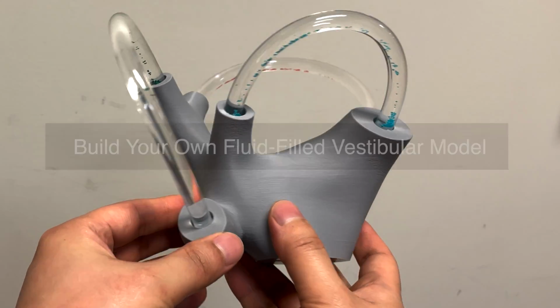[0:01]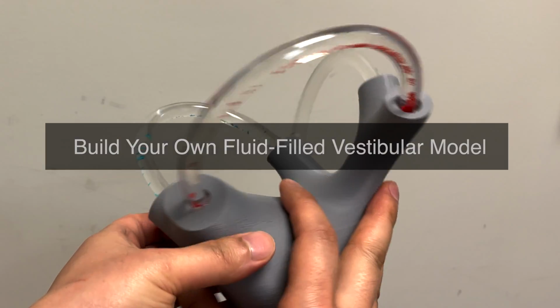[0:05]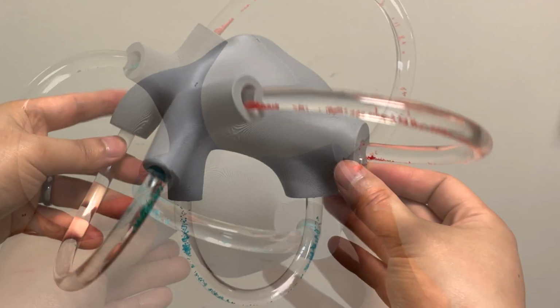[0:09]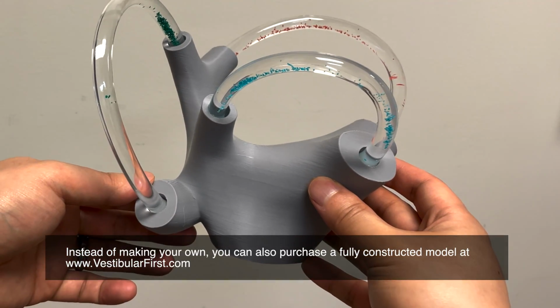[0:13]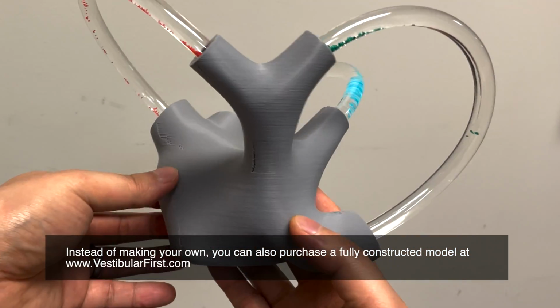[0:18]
The folks at Vestibular First have provided instructions on how to make your very own fluid-filled vestibular model. This model is enlarged, but anatomically accurate, and allows patients as well as healthcare providers to better understand the semicircular canal fluid dynamics as well as how inner ear crystals respond to gravity when displaced in the canals.
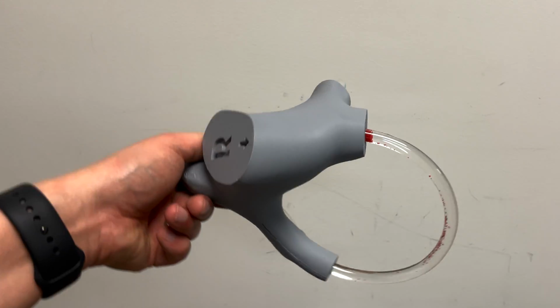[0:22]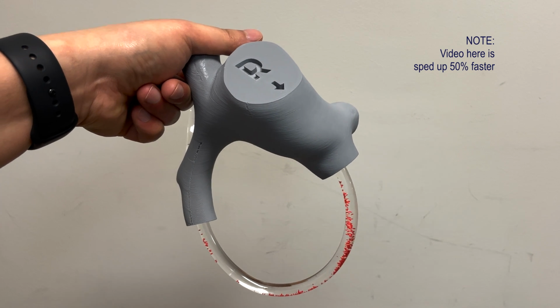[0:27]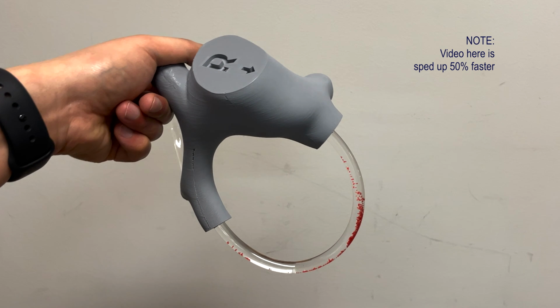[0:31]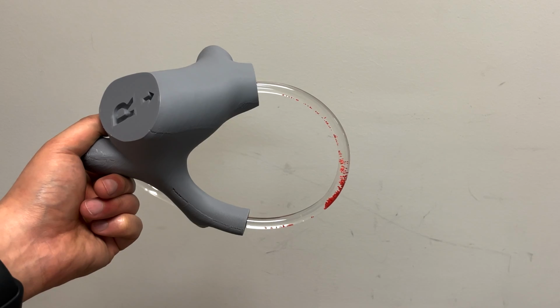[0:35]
The model, once constructed, is 5.3 inches tall, 7.9 inches wide, and 7.5 inches deep. The tubings contain mineral oil and crushed rock which mimic otoconia movement and response to gravity in a realistic manner. You can also purchase a fully constructed model at vestibularfirst.com.
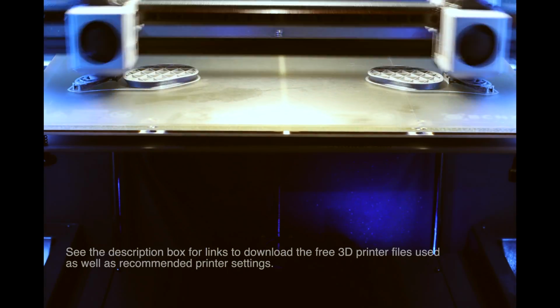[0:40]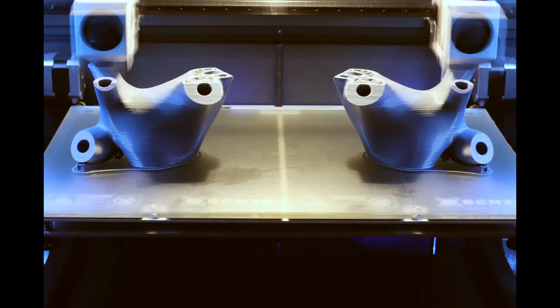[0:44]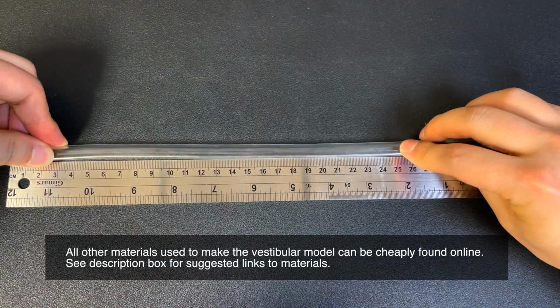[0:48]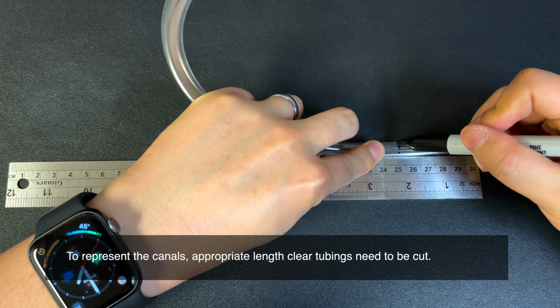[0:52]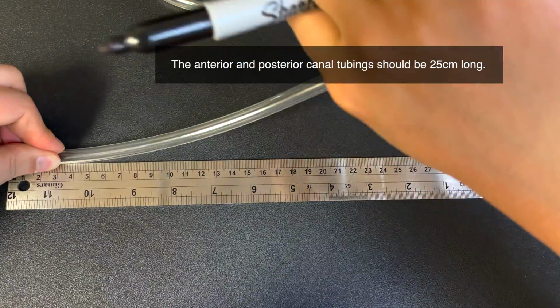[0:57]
First, 3D print the vestibular model. See the description box for links to download the free 3D printer files. Measure out and cut clear tubings to represent the semicircular canals. The anterior and posterior canals should be 25 cm long whereas the horizontal canal should be 21 cm.
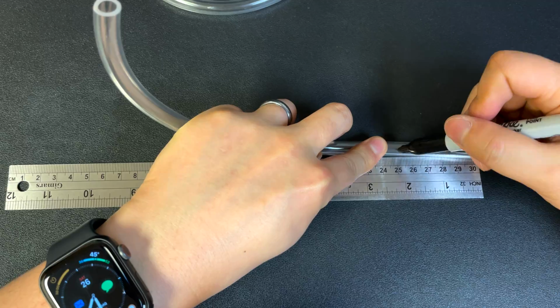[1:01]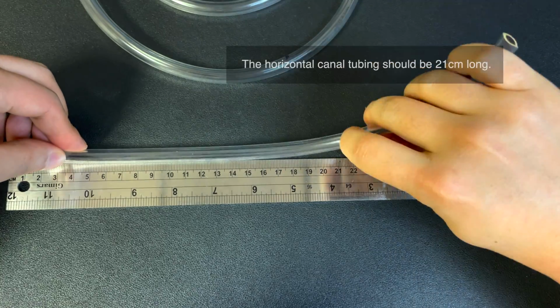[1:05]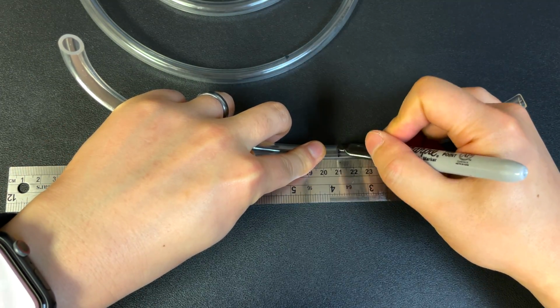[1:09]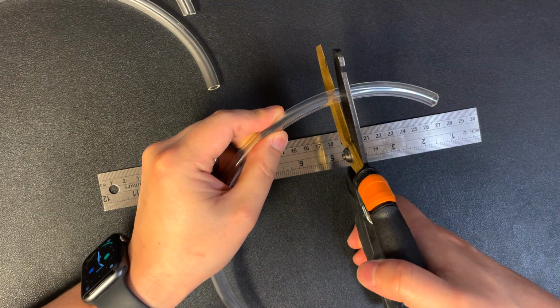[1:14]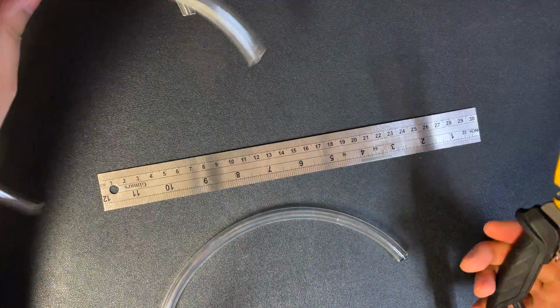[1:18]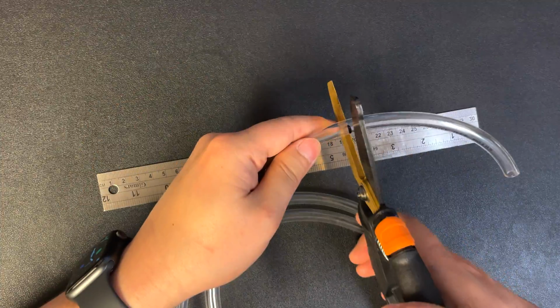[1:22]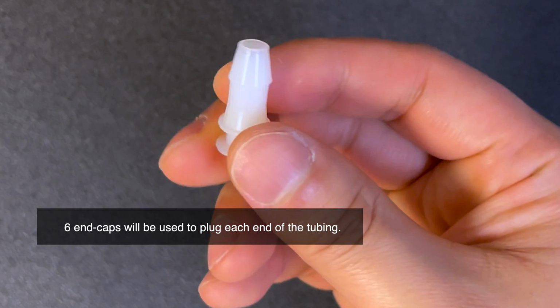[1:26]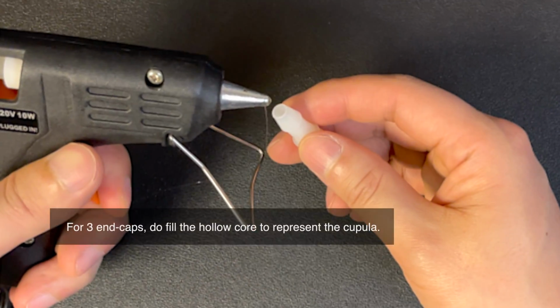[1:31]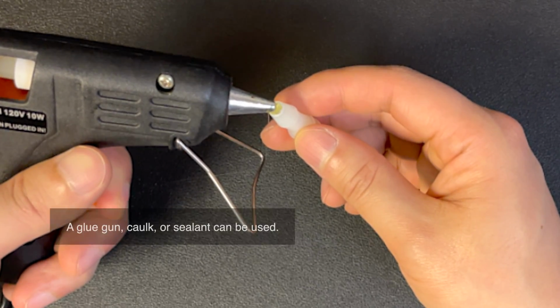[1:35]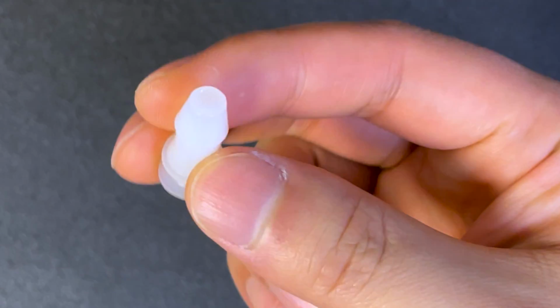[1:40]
Fill three end caps with a sealant of some sort and leave a small convex surface over the end to simulate the profile of the cupula. Fill the entire cap by starting at the bottom and working your way to the top. Be careful not to allow any sealant to stick to the outside parts of the end cap or it will not seal correctly.
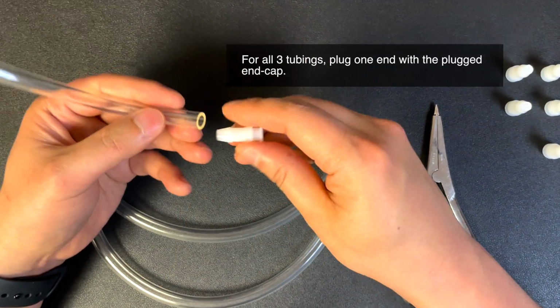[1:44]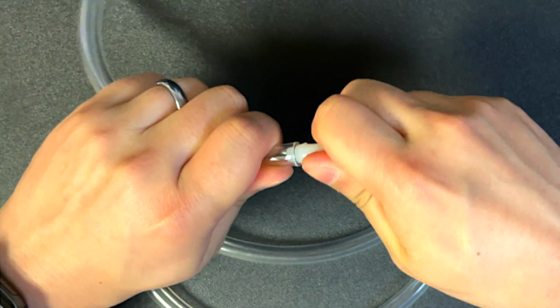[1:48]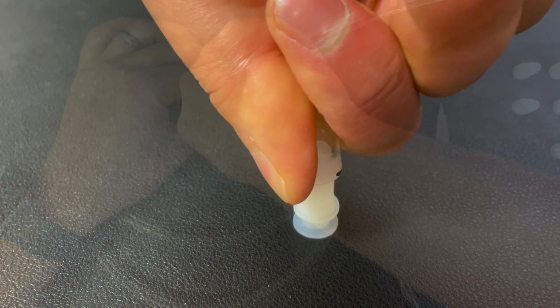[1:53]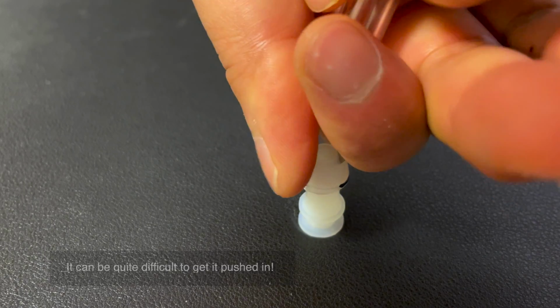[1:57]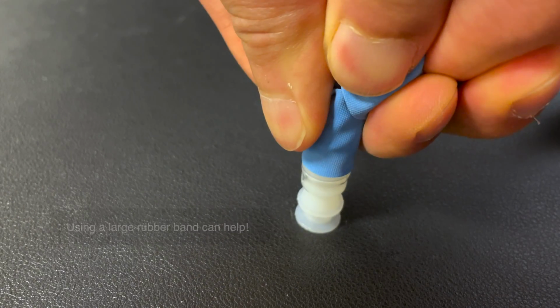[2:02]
Insert one cupula plugged end cap into each of your cut tubes. You should have one side open on each tube when finished with this step. It is not easy to insert the end cap into the tube. It is recommended to use both hands and firmly press the tubing into the end cap using your body weight. A large rubber band wrapped around the tubing makes this easier to accomplish.
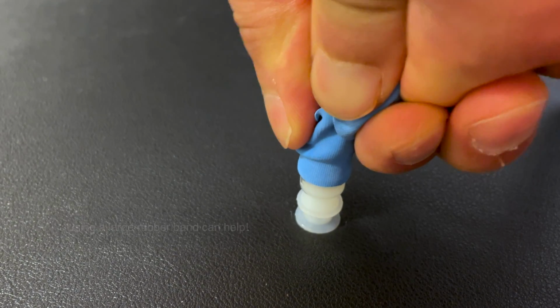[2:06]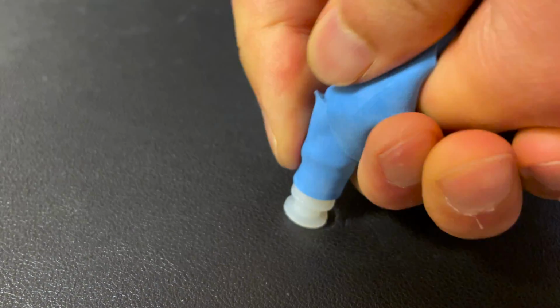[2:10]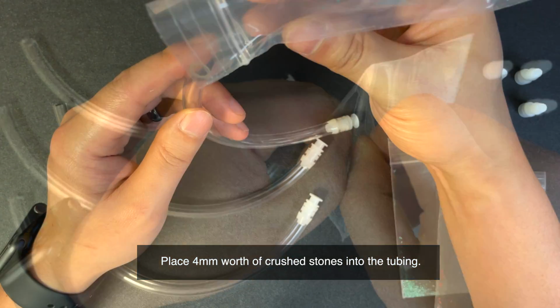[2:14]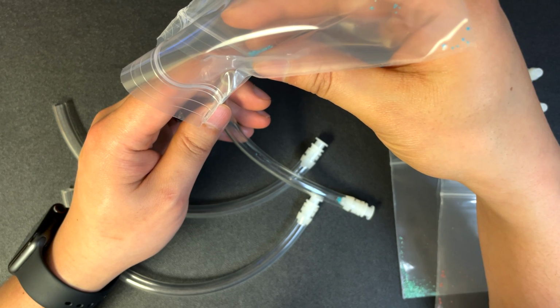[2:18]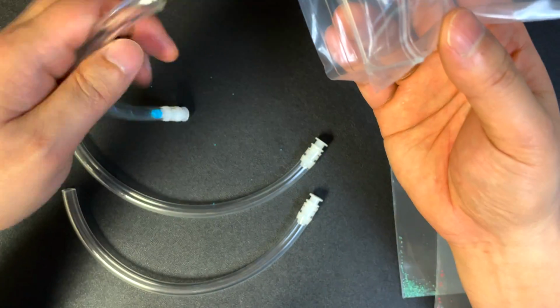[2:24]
Fill the tube with approximately four millimeters of crushed stones. You can use different colors for each tube. Here, crushed turquoise was used for the blue stones. Crushed malachite for green. Crushed red coral for red.
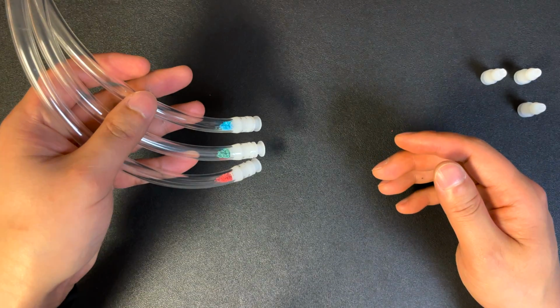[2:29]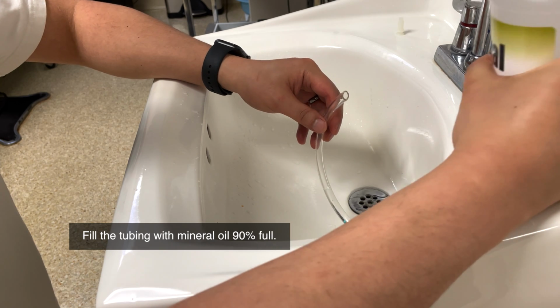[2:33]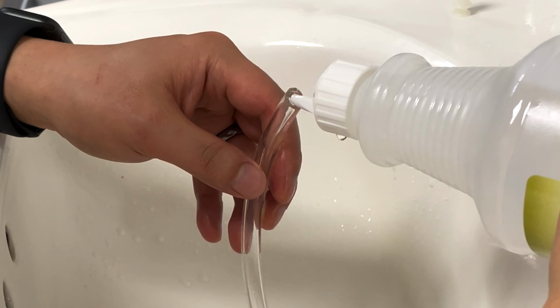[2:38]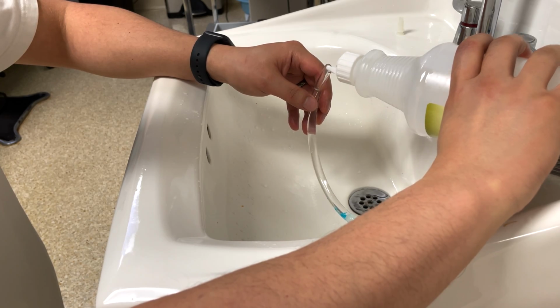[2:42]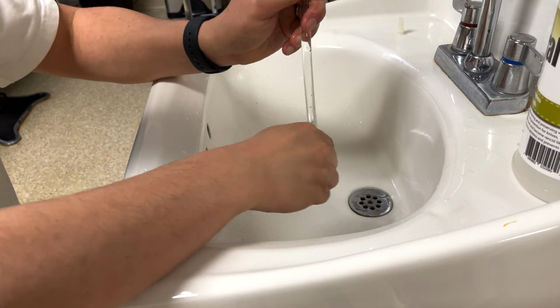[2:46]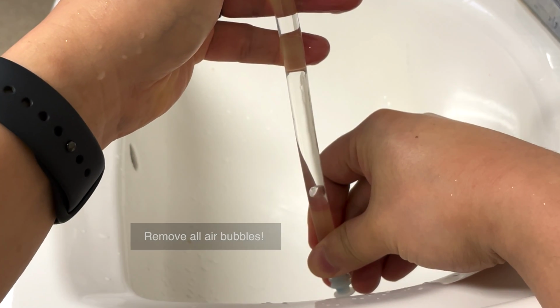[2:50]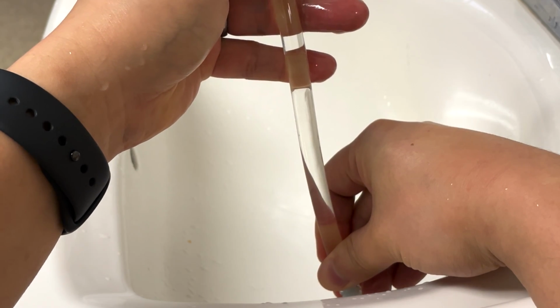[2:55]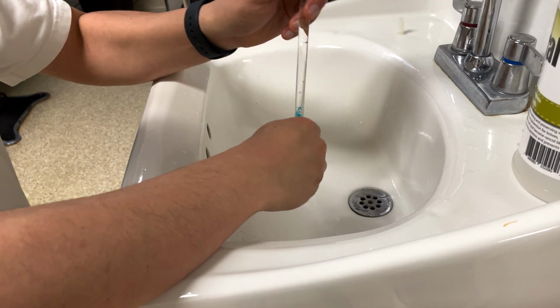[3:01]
Over a sink, fill the tube with mineral oil about 90% full. You will notice there are small air bubbles trapped under the stones and on the walls. Gently tap the tube to help the air bubbles rise to the top. You may have to do this several times before they all float to the top. Stand the tube upright to help move the process along.
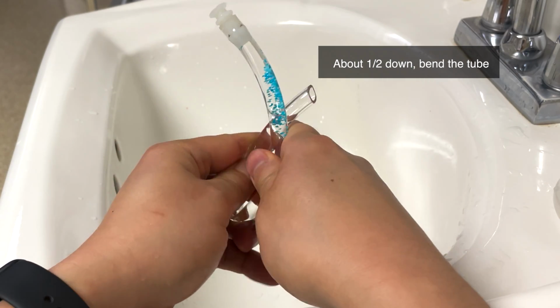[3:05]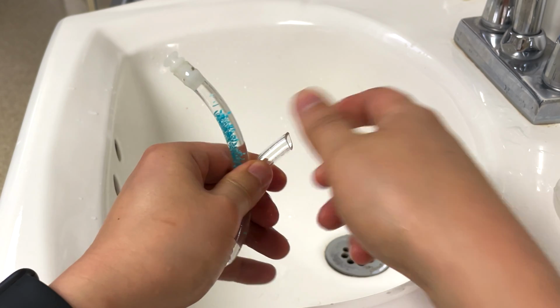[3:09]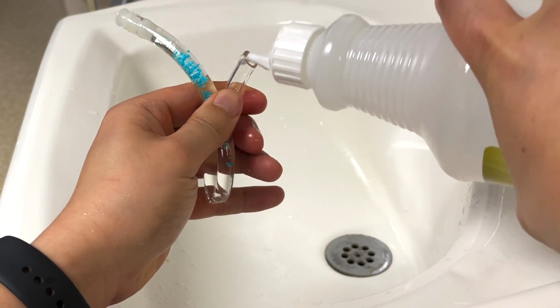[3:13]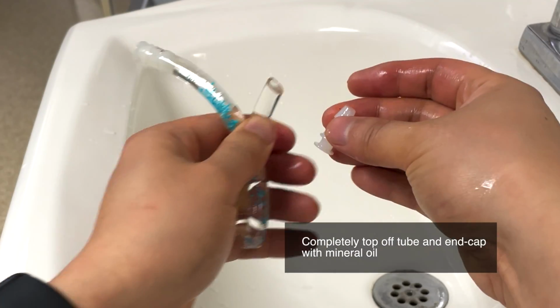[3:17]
Bend the tube approximately in half to create a crease. This step is important to prevent too much pressure from building up in the tube when sealing in the last step, so don't skip it. Next, completely fill the tube and hollow end cap with mineral oil. Always check to make sure no air bubbles are present.
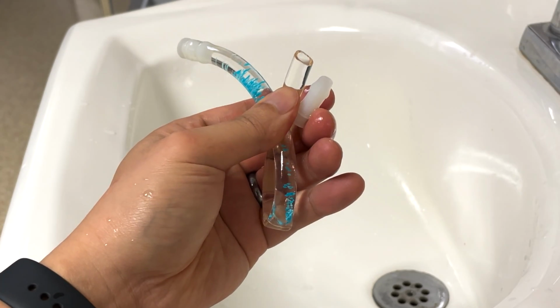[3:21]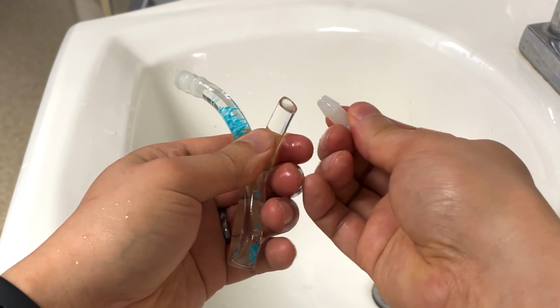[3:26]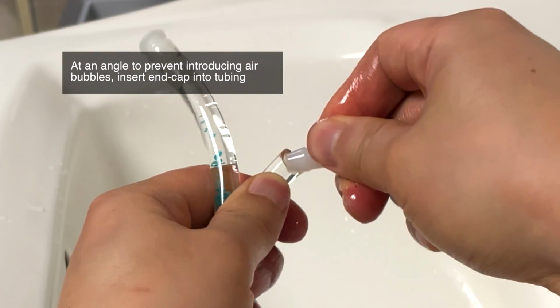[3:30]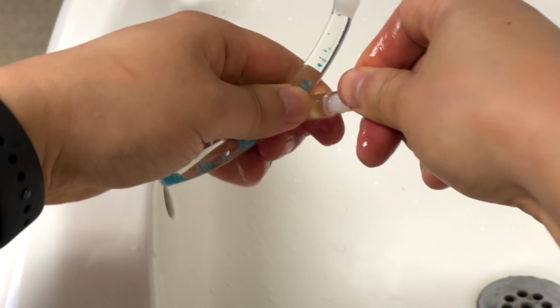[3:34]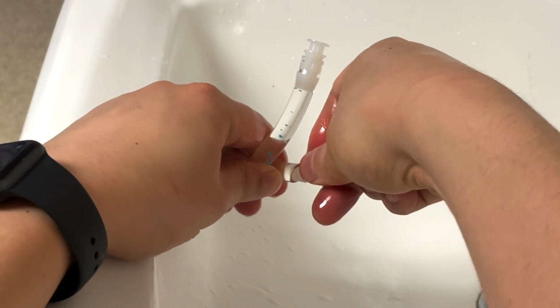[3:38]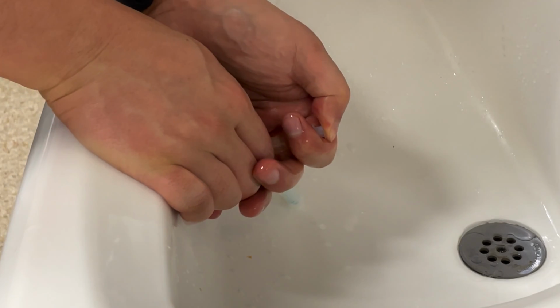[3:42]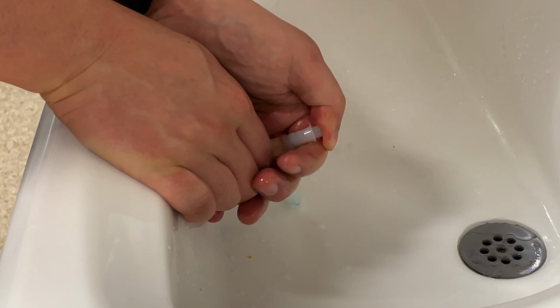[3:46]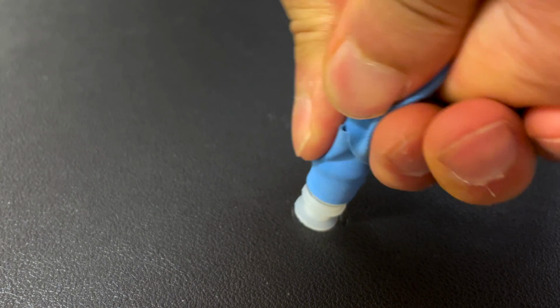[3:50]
Carefully bring the end cap and tube together at an angle. Make sure the oil does not become concave in either the end cap or tube to prevent air from being introduced. Press the end cap partially into the tube. Here I used the sink's overflow drain to help stabilize the tubing to help press the end cap in. Once you've confirmed there are no air bubbles in the tube, release the tube bend and firmly press the end cap fully into the tube.
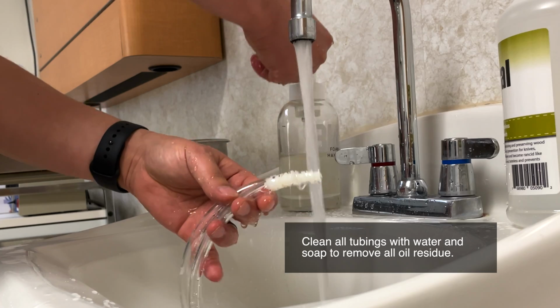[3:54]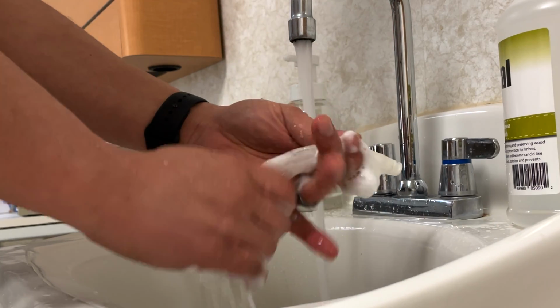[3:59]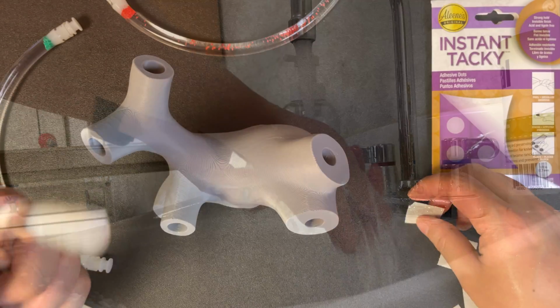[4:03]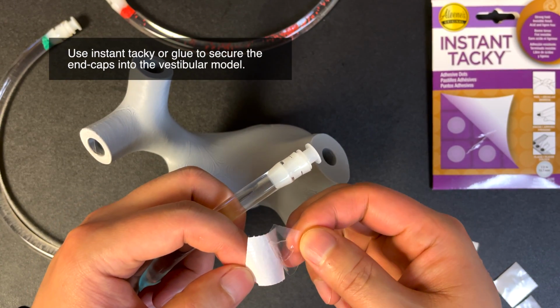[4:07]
Once you have sealed all of the tubes and there are no air bubbles, use soap and water in a sink to wash the tubes and remove any residual oil from the outside. Glue or adhesive tack dots as shown here can be used to attach the tubing to the vestibular model.
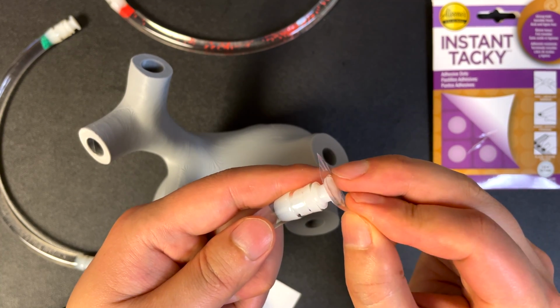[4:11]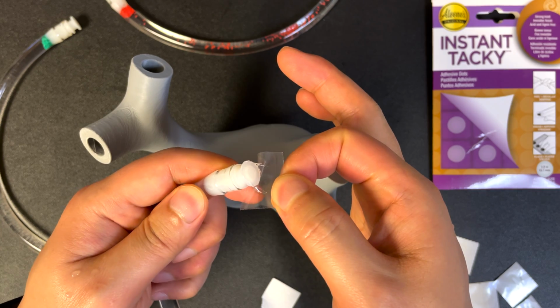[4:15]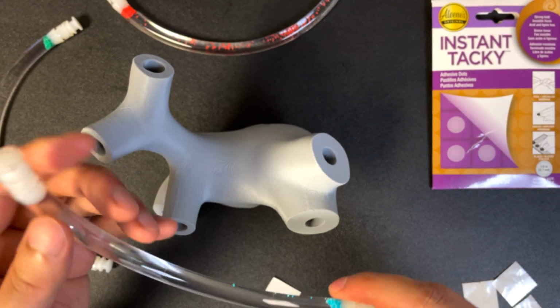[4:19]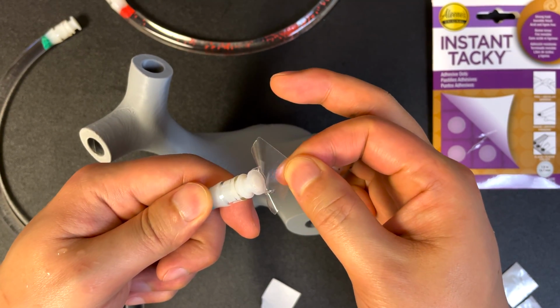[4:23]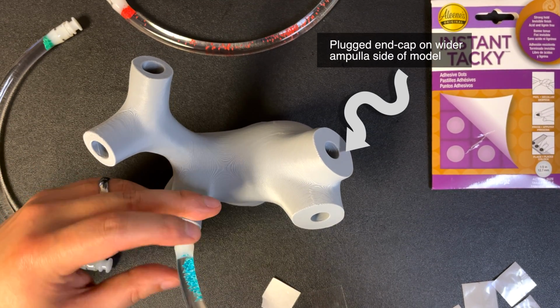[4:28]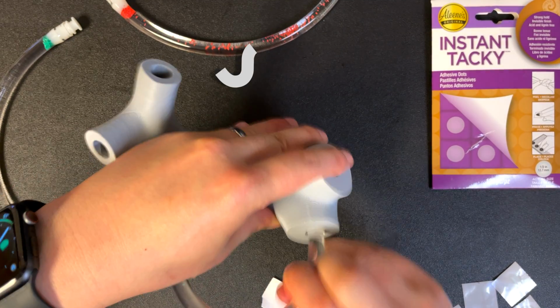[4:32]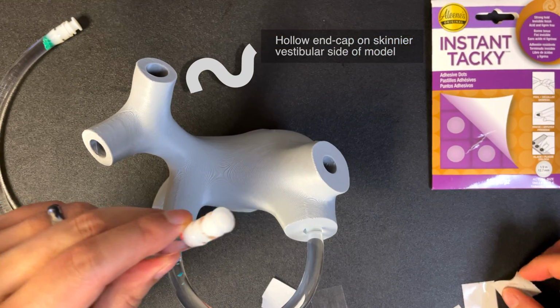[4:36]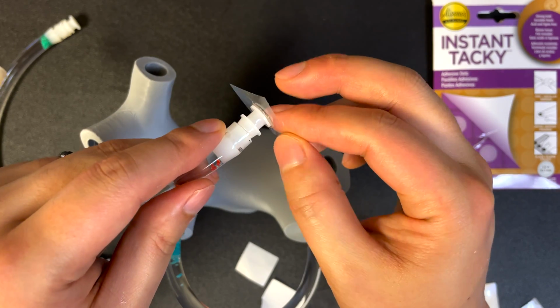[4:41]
The vestibular side of the tube is deeper than the ampullar side and you should not see the hollow end cap tip. The cupula side using plugged end caps will show a small part of the end cap as well as the convex sealant you added earlier. Make sure you affix the plugged end cap cupula side of the tube into the wider ampulla side of the model or you will not be able to replicate the anatomy of the inner ear correctly.
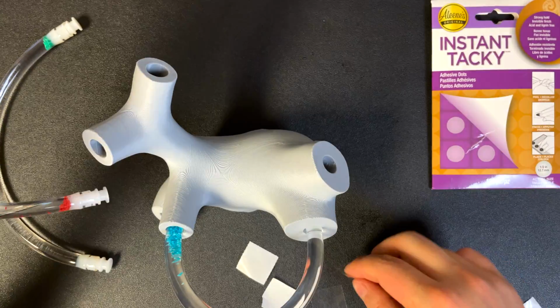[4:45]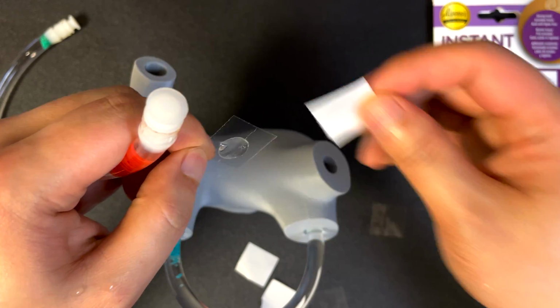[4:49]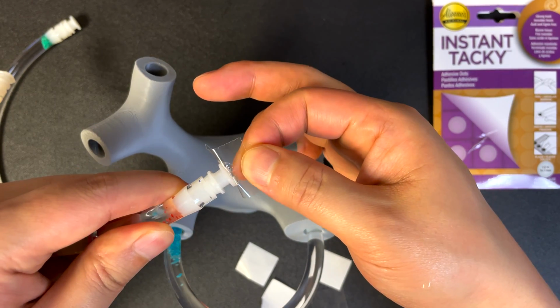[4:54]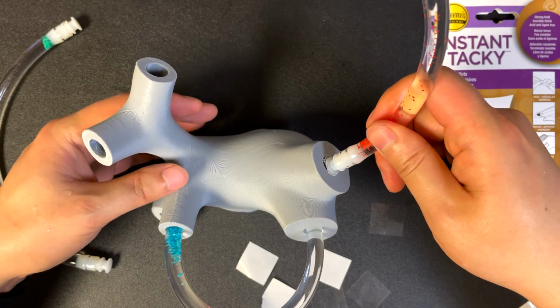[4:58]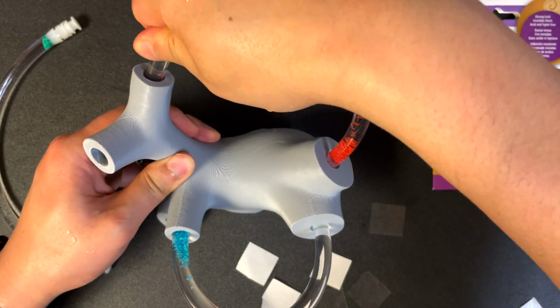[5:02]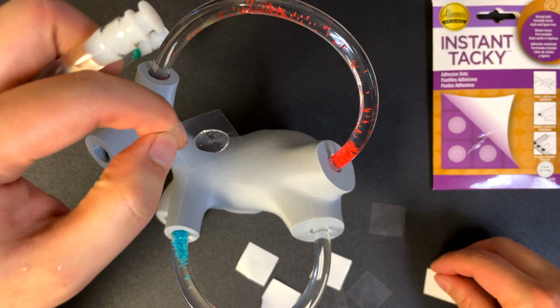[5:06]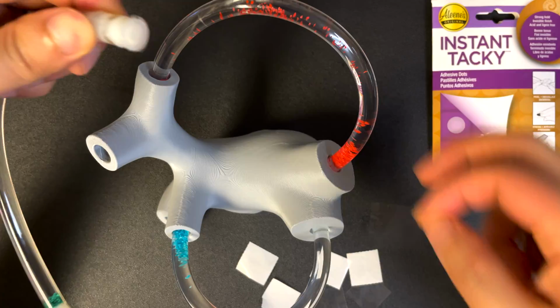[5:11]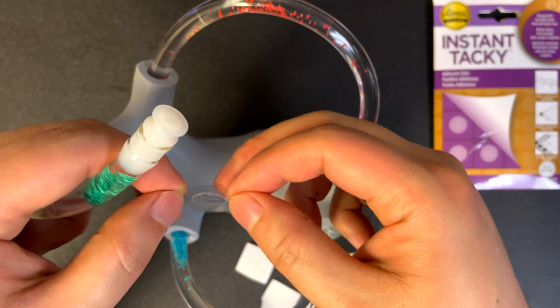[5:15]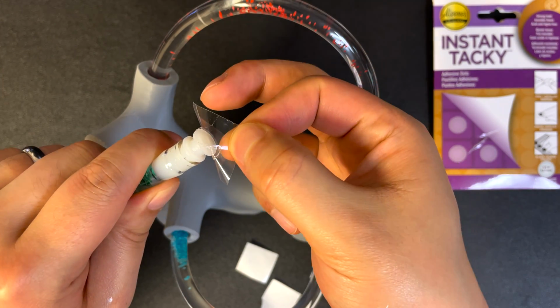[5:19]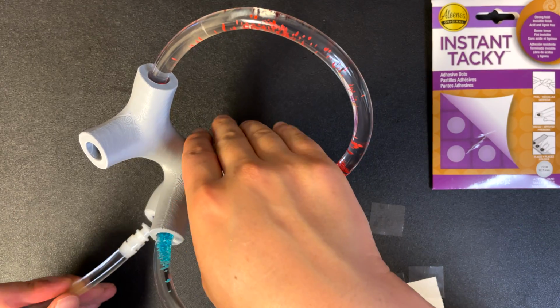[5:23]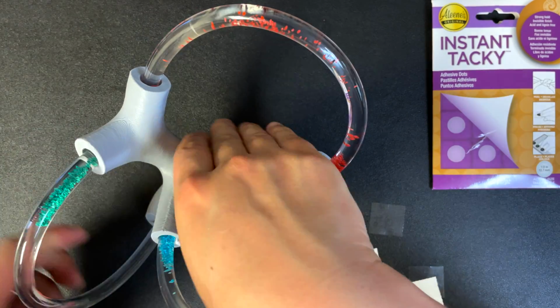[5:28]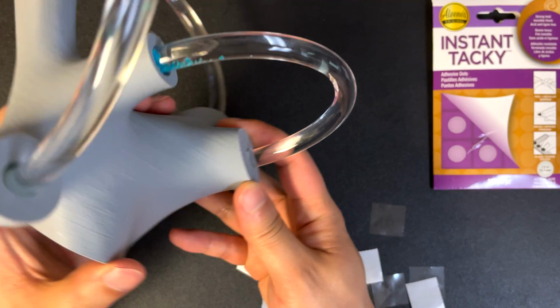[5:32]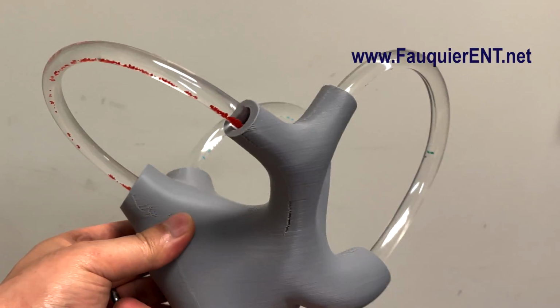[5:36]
education.com